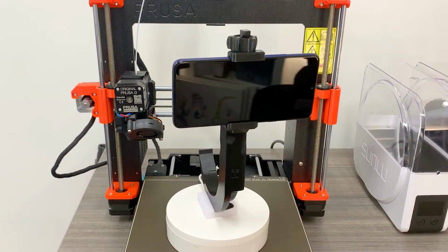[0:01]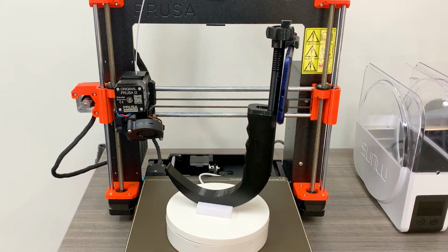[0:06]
Today I'm going to discuss the design, manufacture, and basic testing of an open-source and inexpensive 3D printed video laryngoscope with integrated phone mount.
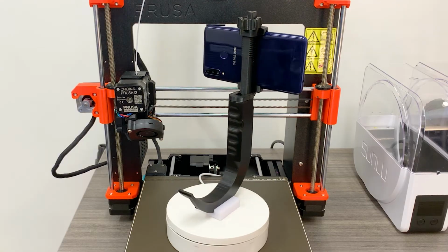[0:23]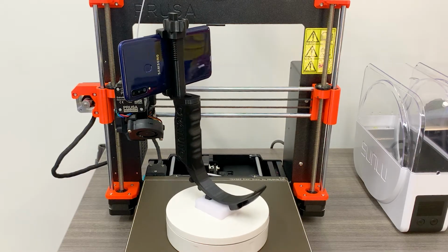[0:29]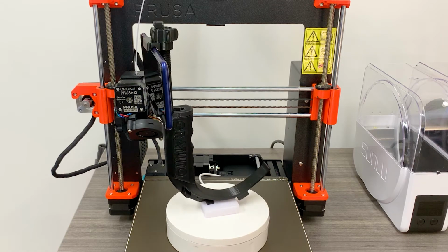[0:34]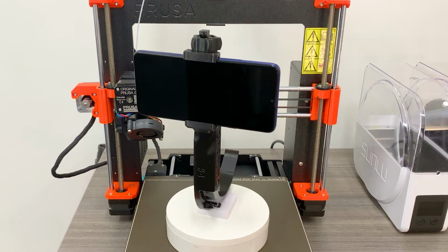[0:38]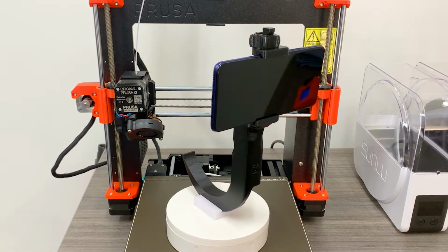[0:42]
A number of open-source video laryngoscopes for 3D printing have become available from a wide variety of inventors. With the proliferation of these devices, one design upgrade that I have yet to see as a standard option is adding a phone mount directly to the laryngoscope for ease of use. Within the resource-limited environments in which these 3D printed laryngoscopes are likely to be used, it seems logical that a single-handed device would be more efficient than an assistant holding the phone.
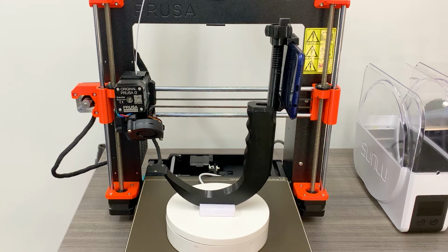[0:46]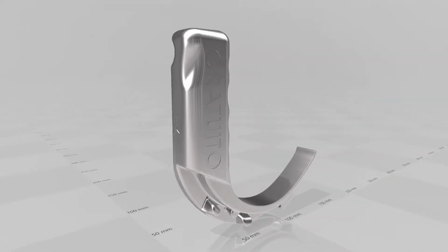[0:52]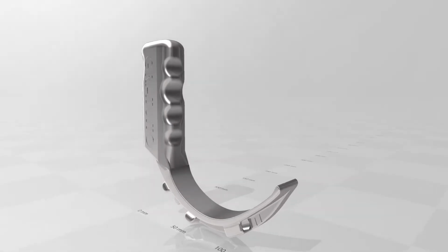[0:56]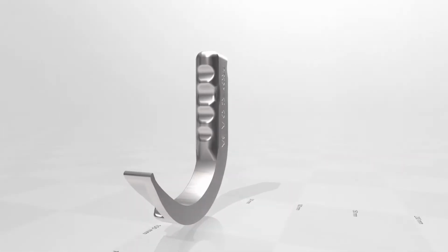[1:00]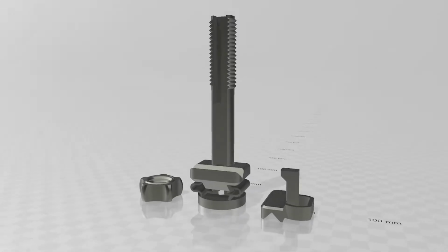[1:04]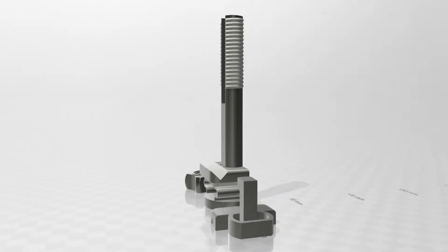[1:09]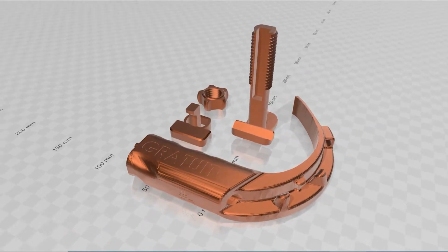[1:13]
Rather than making a new 3D model from scratch, to expedite this project I remixed a couple existing open-source projects. I used a laryngoscope from Proyecto Alba which was designed by a group of engineers in Mexico during the early portion of the COVID-19 pandemic in 2020, along with the second project, a universal phone tripod mount. Links to both projects and their creators are in the video description below. I modified the models in CAD so that they would easily mount together.
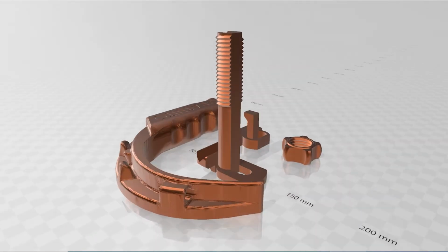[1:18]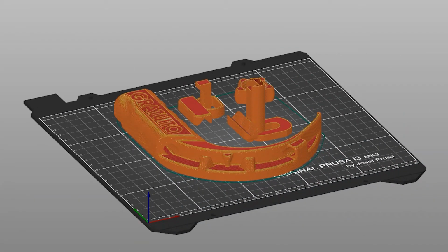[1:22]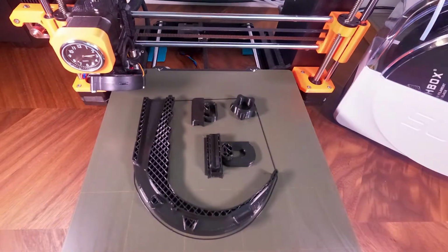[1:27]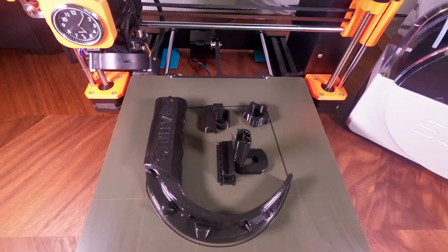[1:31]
I prepared the model for printing with Prusa slicer. I printed the project on a Prusa i3 MK3 at 0.3 millimeter layer height with 20% infill with Hatchbox brand PLA. The print used 90 grams of filament costing approximately $1.75.
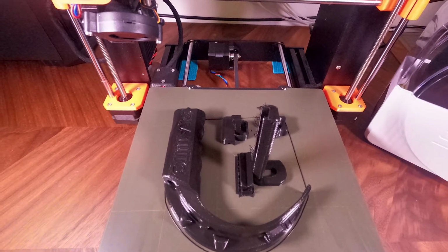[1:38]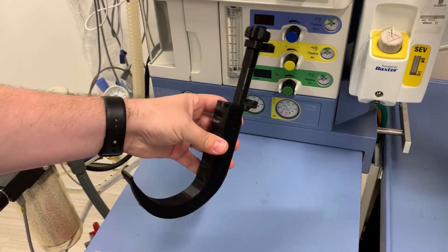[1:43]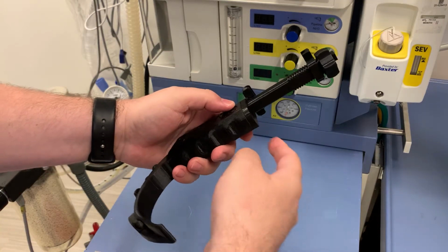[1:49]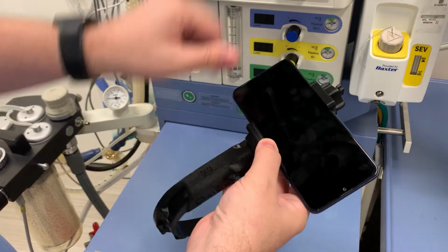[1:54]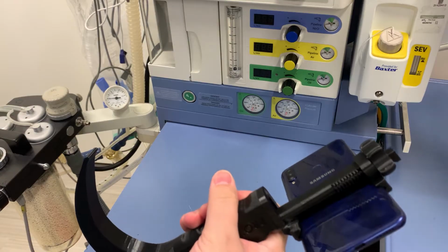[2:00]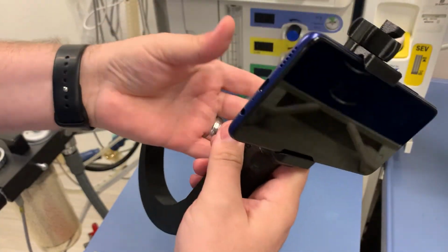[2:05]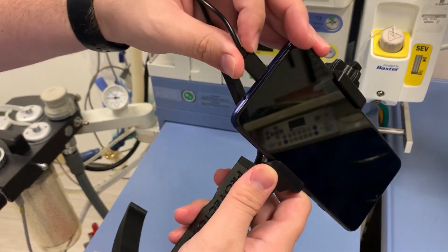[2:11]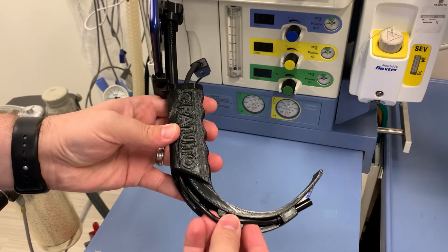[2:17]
The 3D printed parts assemble easily. The tabs for the phone mount fit snugly into the laryngoscope, but I added a few dabs of glue around the perimeter to hold them together permanently. The phone slides into the mount and tightens in with the screw on top. An inexpensive seven millimeter USB endoscope slips into the handle and out the bottom. It plugs into the phone's USB-C port. The endoscope camera slides into the end component and locks in place.
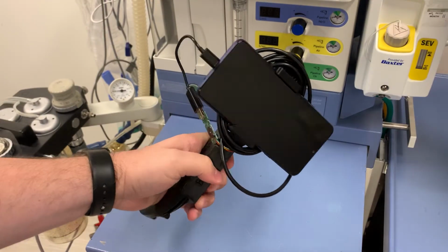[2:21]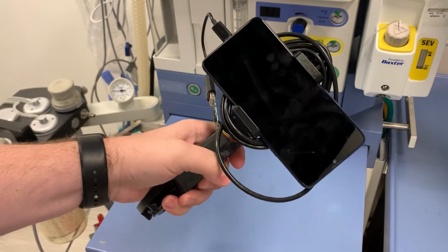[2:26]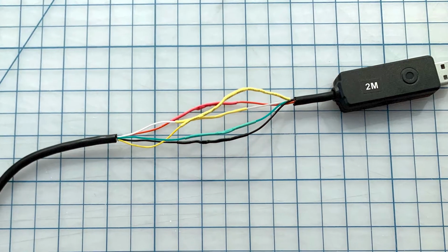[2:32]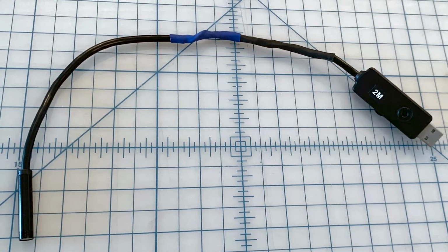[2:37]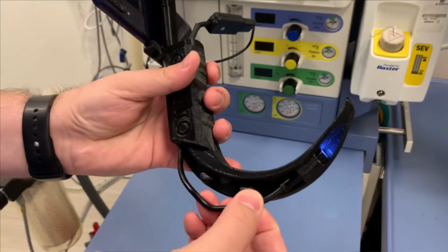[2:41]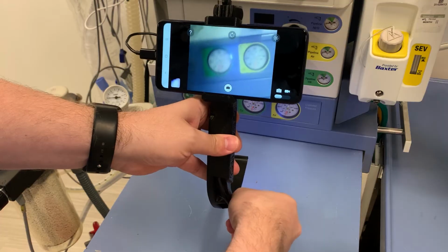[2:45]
In the first revision of the project, I used the endoscope as is and had to wrap the extra wire around the scope multiple times, making it awkward and cumbersome. I was able to easily improve the usability of this device by cutting out the excess wire and splicing the ends together, as well as adding shrink tubing for a finished look. These inexpensive endoscopes don't have any markings as to orientation, so one needs to be mindful to rotate the camera to the correct upright orientation before locking it into place.
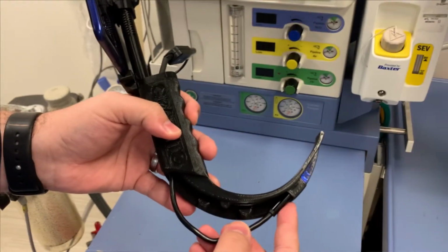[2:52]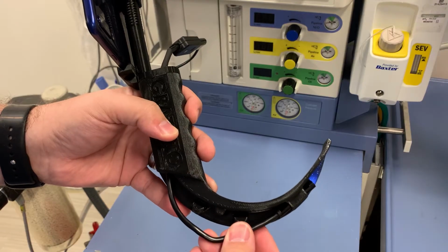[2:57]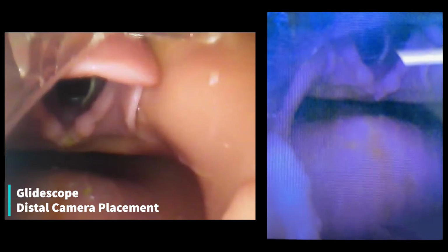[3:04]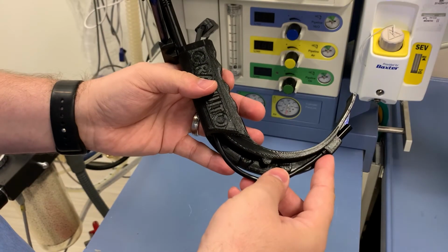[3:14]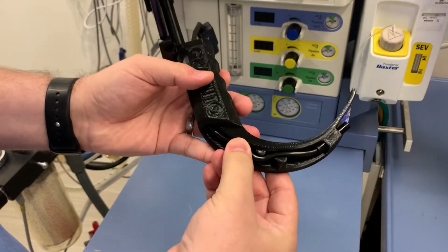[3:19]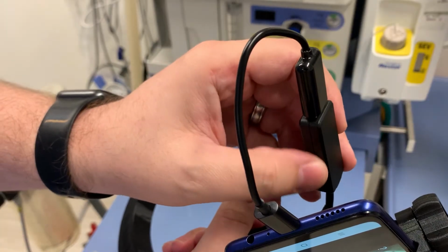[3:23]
Unlike a regular video laryngoscope, the camera depth on this 3D printed device is not fixed, so it can be changed to suit the operator's preference. If we compare the images of a GlideScope and a McGrath Mac, we see that the different manufacturers may choose to fix the camera more distally or proximally on the device. With the 3D printed laryngoscope, the camera depth can be easily changed and locked back into place at any time. Another unique advantage is the ability to quickly change the camera brightness, a feature not available on any popular commercially produced laryngoscope.
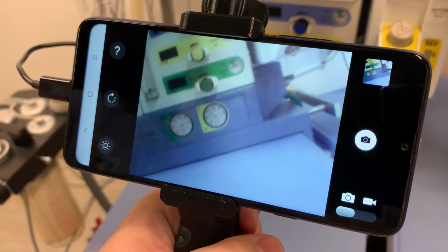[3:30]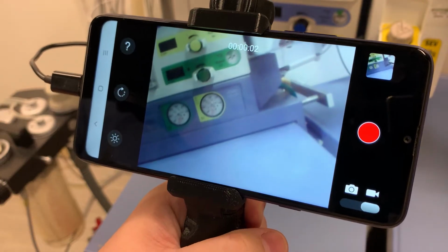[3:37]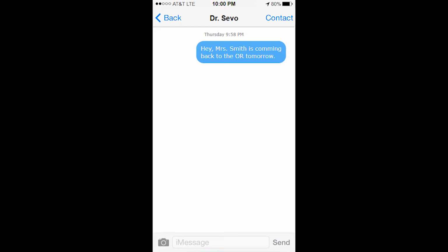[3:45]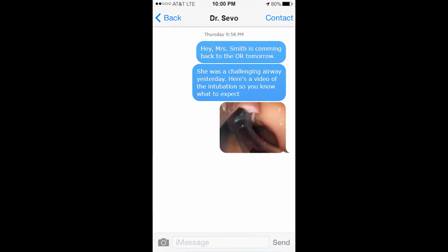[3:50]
Exploring further the unique features of this setup, the device allows you to record intubation pictures and video directly to your phone. Although many commercial video laryngoscopes offer video recording, they lack the convenient internet connectivity that comes standard on one's phone. This introduces a unique ability to share important medical interventions easily and in real time. Imagine being able to immediately share a difficult airway case via your phone versus spending an hour figuring out each manufacturer's proprietary software and hardware.
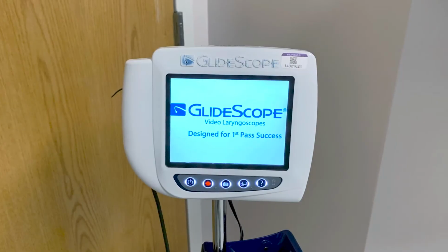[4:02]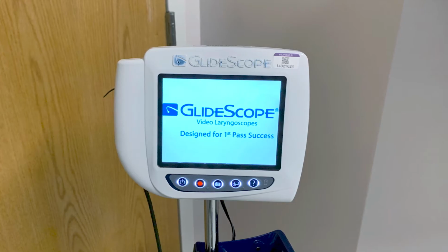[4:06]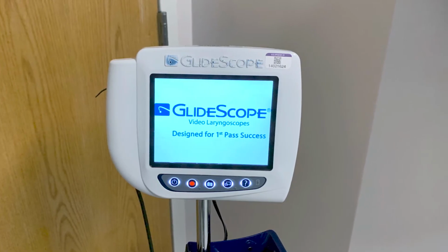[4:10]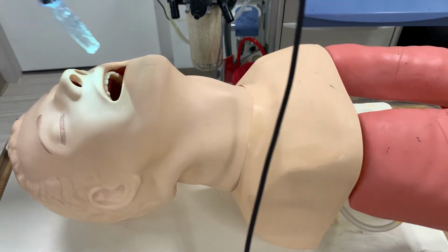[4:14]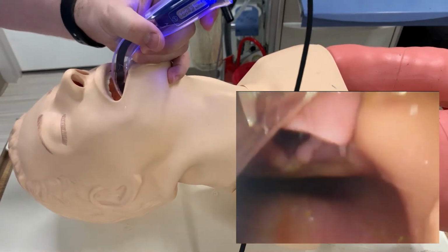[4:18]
Now that we've discussed the 3D printed laryngoscope in depth, let's test it out against a commercial device. We'll compare the 3D printed device with a GlideScope, a very popular video laryngoscope used in many hospitals in the US. The GlideScope inserts easily into this model and produces a clear grade 2a view, allowing for a straightforward intubation.
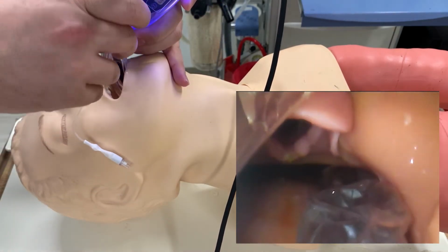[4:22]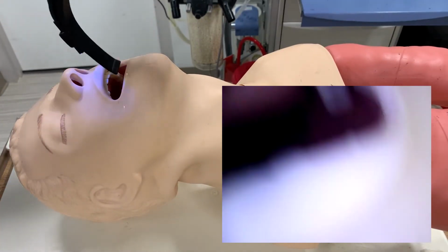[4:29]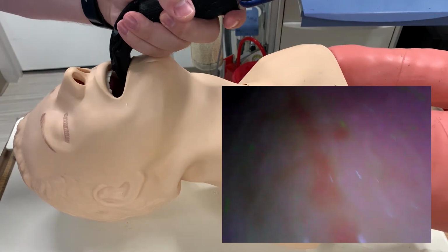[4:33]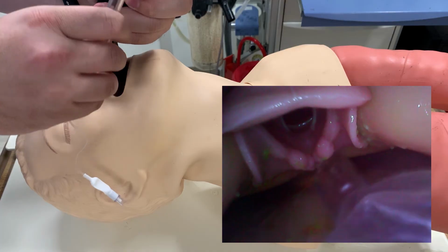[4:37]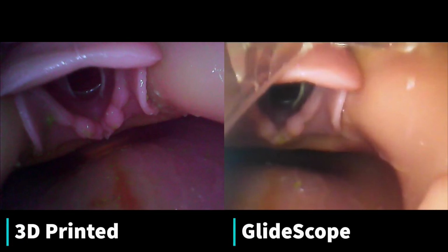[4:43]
Comparatively, the 3D printed laryngoscope also produces a clear grade 2a view, allowing for a straightforward intubation. Comparing the two views side by side, we see that the $7 3D printed device provides a non-inferior intubation view to a $3,000 commercial device.
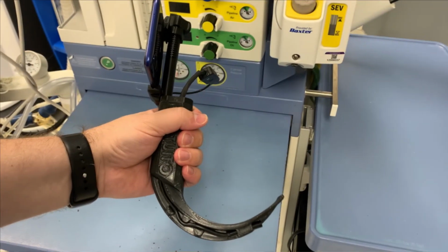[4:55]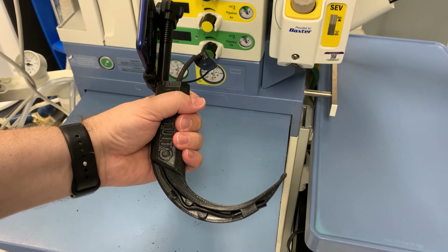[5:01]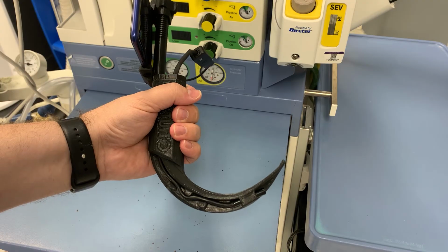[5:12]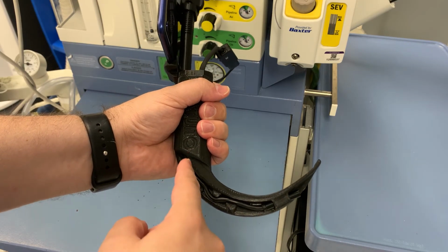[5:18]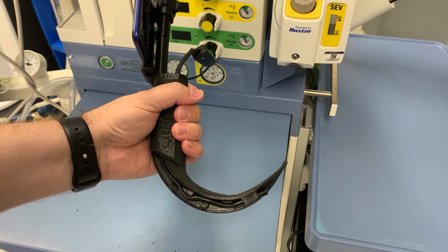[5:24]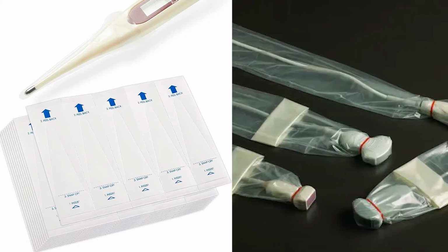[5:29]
3D printing is an intrinsically sterile process, and if the part is handled in a clean manner after printing, it can be safely used without additional cleaning. One would likely want to reuse the endoscope component, which will require it to be cleaned between uses. Although cleaning it with a harsh disinfectant would probably be adequate, it would likely be cleaner and more efficient to find some sort of inexpensive, disposable cover for this portion of the endoscope. I haven't found a product just yet to fit this application. Something like a thermometer cover is too small and ultrasound probe cover too large. Let me know in the comments below if you know of a product that might fit this application.
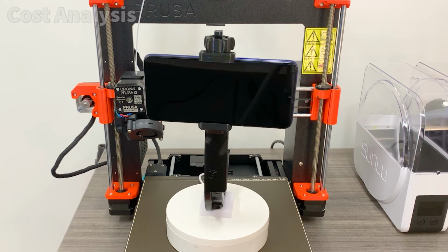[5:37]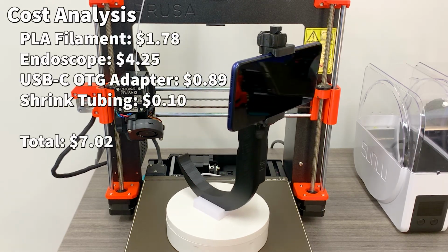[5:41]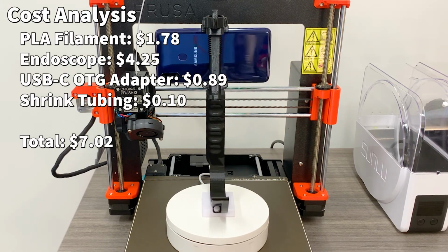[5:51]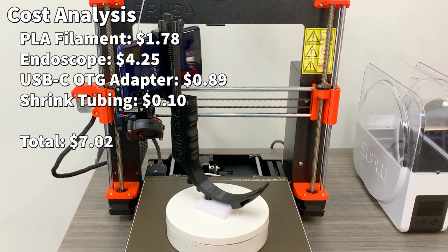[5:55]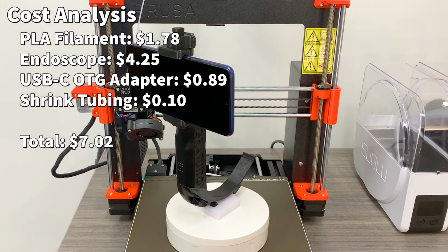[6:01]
And finally, a brief cost analysis of the project. The cost of the PLA filament used was $1.78. I purchased the USB endoscope from AliExpress for $4.25. I needed an adapter to connect the endoscope to my phone, which I got off eBay for $0.89. And I used a few pieces of shrink tubing from a large previously purchased package, which I estimate the cost to be about $0.10. The grand total, only $7.
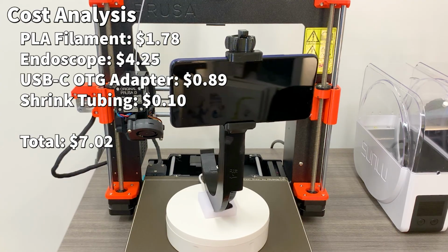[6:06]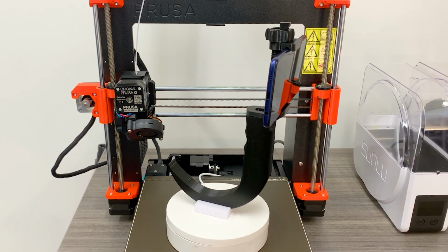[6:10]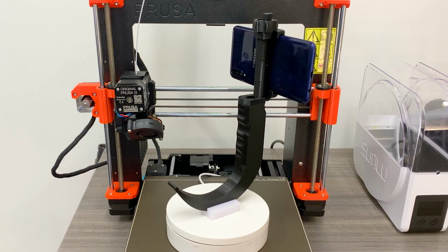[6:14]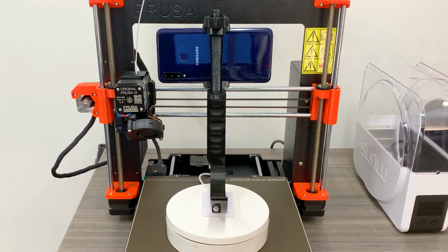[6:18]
Given the extremely low cost and obvious non-inferiority to commercial devices, one can see why 3D printing is becoming a vital tool for medical providers around the world.